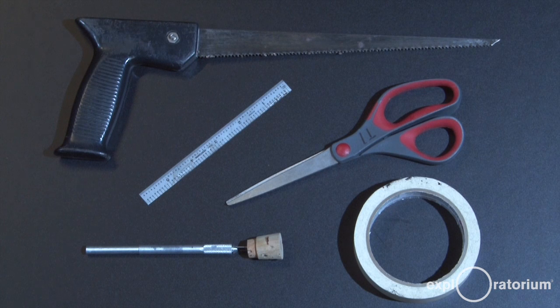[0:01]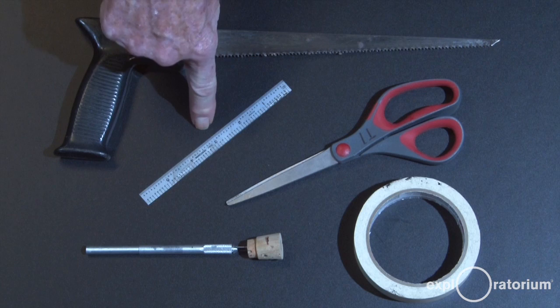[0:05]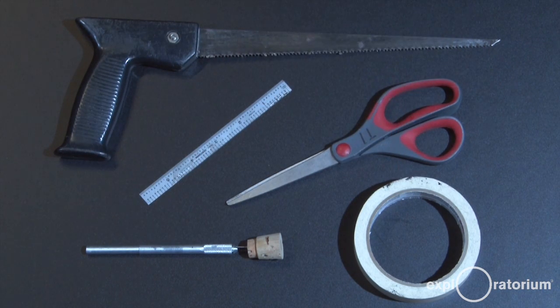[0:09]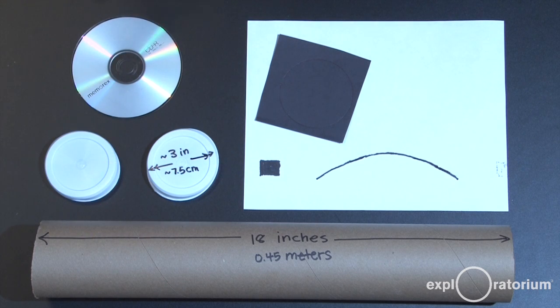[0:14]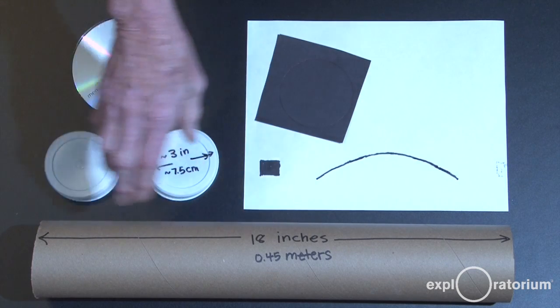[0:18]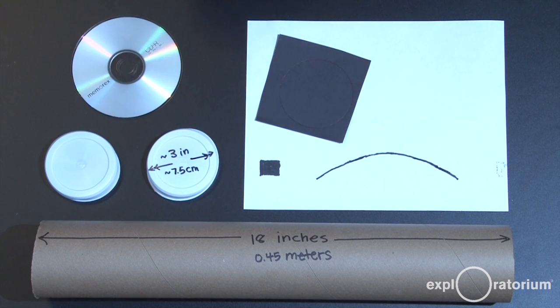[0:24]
The tools I used to build the spectrometer were a wood saw, a metal straight edge, a razor knife, a pair of scissors, and some tape. You'll need to get a poster tube. This is a 3-inch diameter poster tube. They come at about 3-foot lengths. You can cut them roughly in half. That'll give you a tube about 18 inches long or 0.45 meters long. You'll need the two end caps to shield out light from the tube.
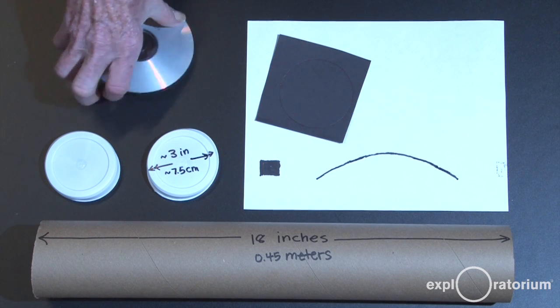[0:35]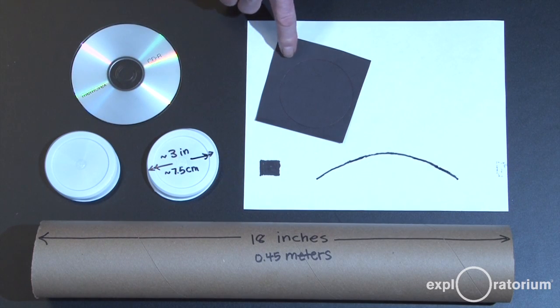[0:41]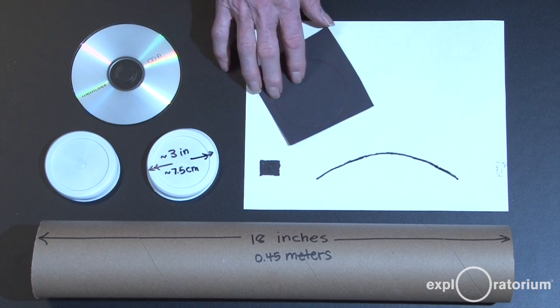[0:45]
You'll need a compact disc. The ones we found to work best are the recordable kind that are blank. Any CD will work, but these work the best. Sometimes they have a bluish coating on them. You want the ones that look silvery bright. You'll need a piece of construction paper, which we're going to cut our slit in, and you'll need our cutting guide, which will be available online.
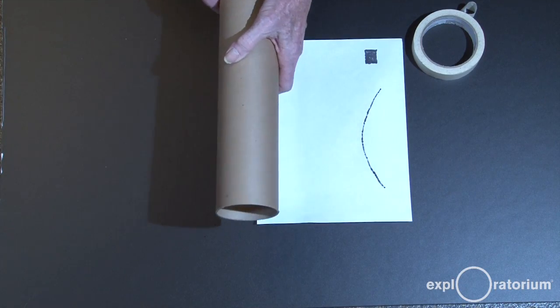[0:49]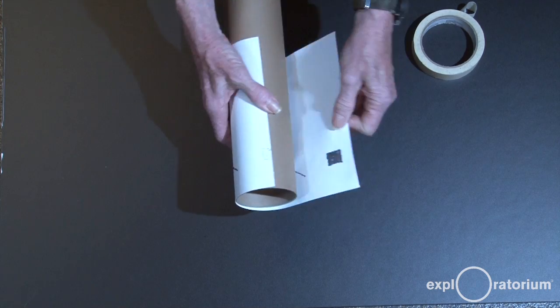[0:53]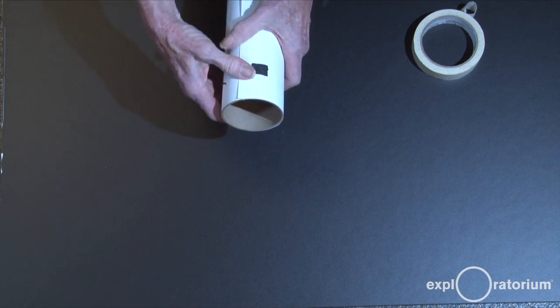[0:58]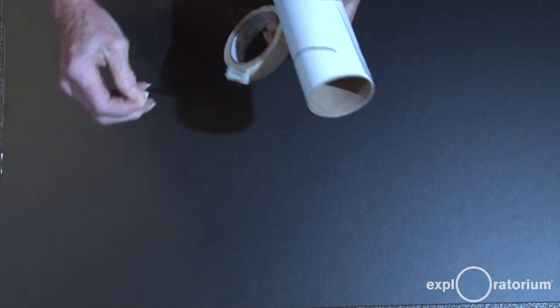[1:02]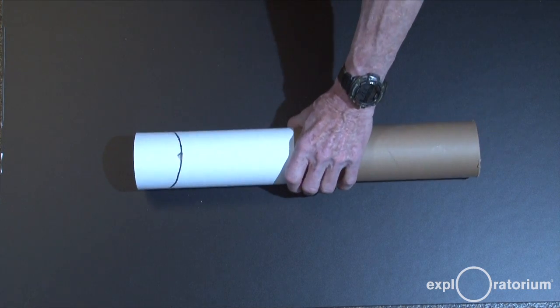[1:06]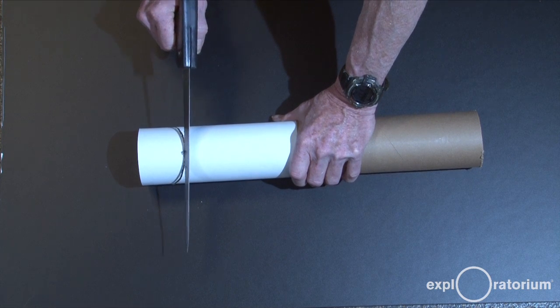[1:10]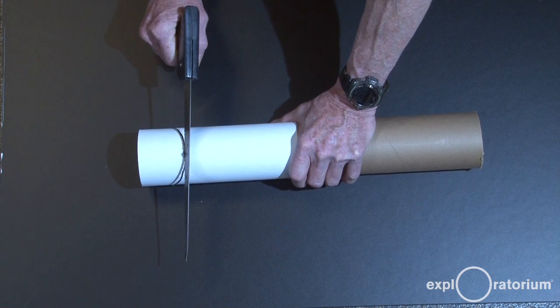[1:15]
To cut the slot for the compact disc, you'll take our cutting guide and wrap it around the end of the tube. Get it lined up with the end and straight. Then take a piece of tape and tape it down. To cut the slot, put it securely on a surface, bring in your saw, and cut slowly and carefully along the marked line. When you've cut all the way down, you're ready to insert the compact disc.
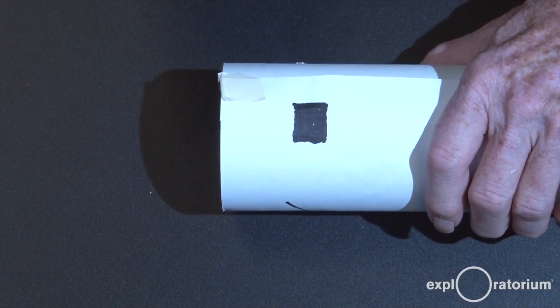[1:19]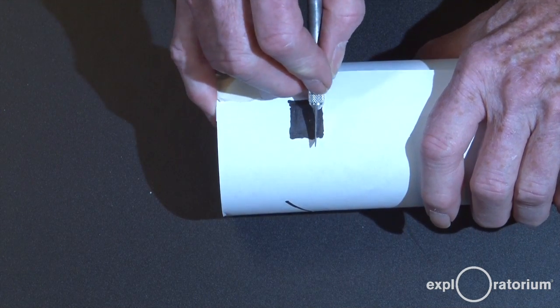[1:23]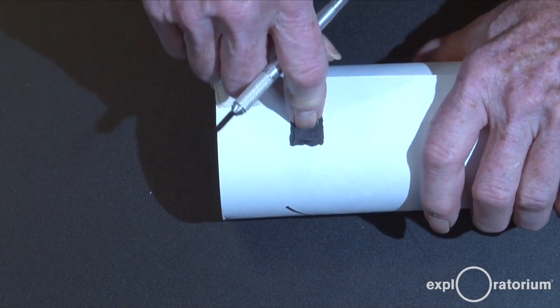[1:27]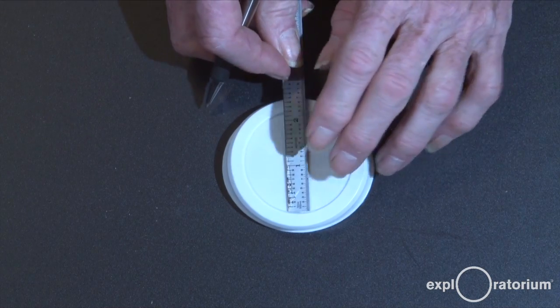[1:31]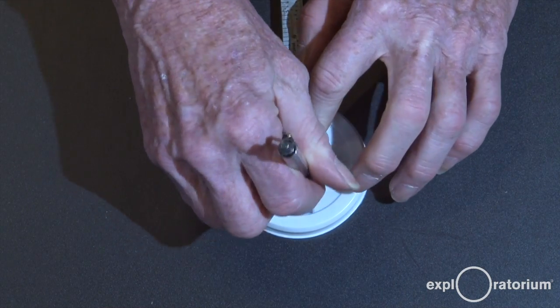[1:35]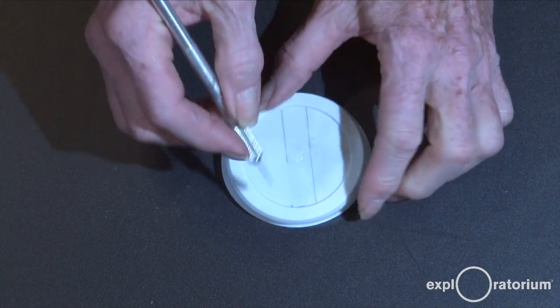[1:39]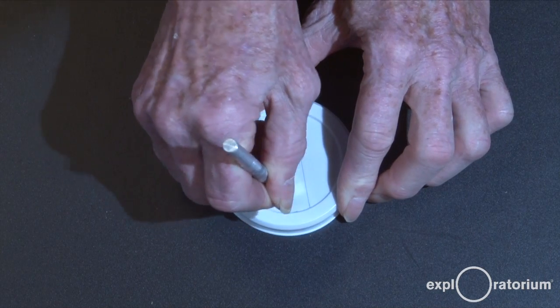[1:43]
To cut the eyepiece, you're going to use the razor knife, and you're going to cut all the way through that black square and then poke out the cardboard. To make the slit, the first thing we're going to do is cut a wider slot in the end cap. So I'm going to use my metal straight edge to mark two lines, and then I'm going to use my razor knife to actually cut out the slot.
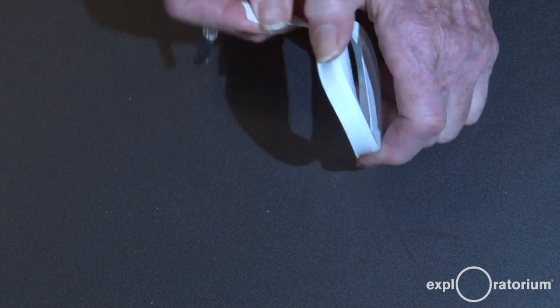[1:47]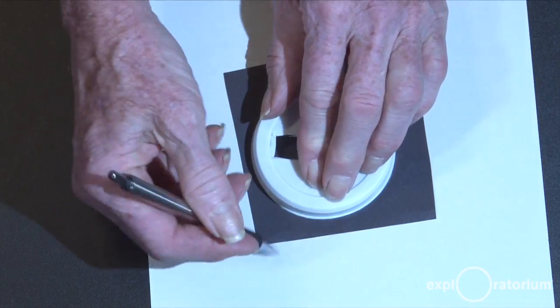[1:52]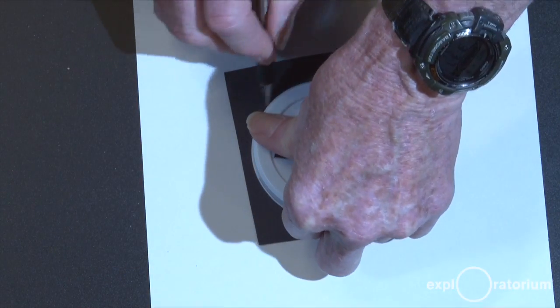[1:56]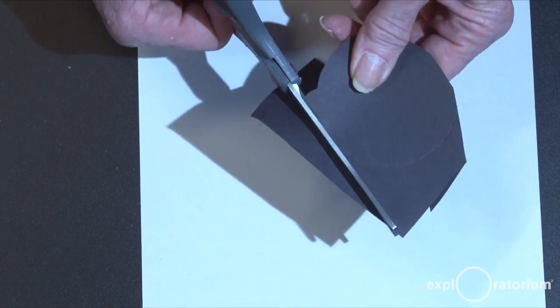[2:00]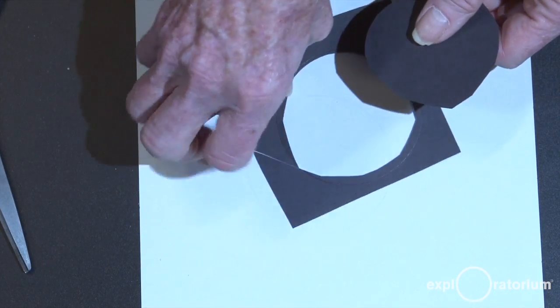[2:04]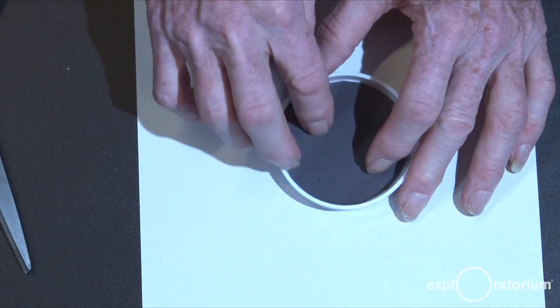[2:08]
Okay. The next thing is we're going to cut out a circular disc of black. First, I'll trace it with my pen. That gets me the outside outline. Then I'll use the scissors, but I'll cut inside that line a little bit. And now I have my disc of paper that will slide nicely inside my end cap.
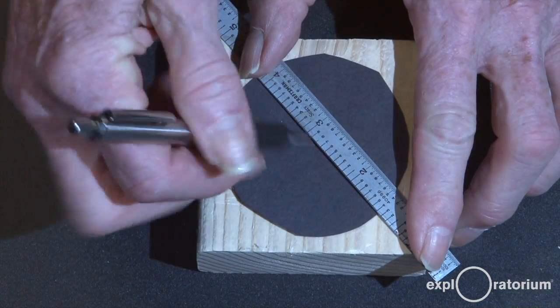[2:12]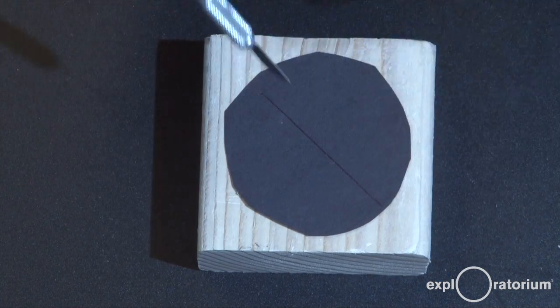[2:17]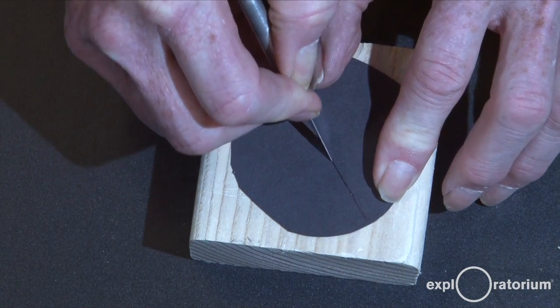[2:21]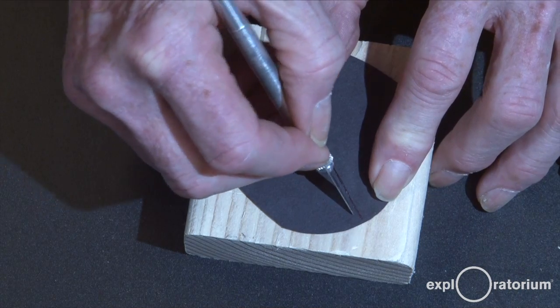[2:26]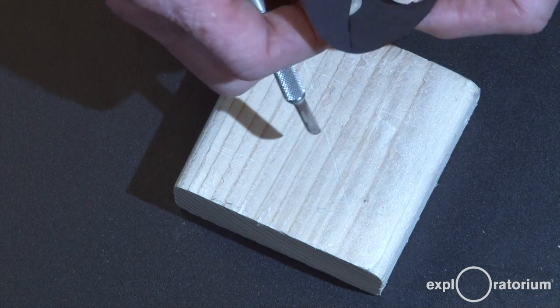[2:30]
So next, I'm going to make a line across a diameter of my black. There it is. And then I'm going to use my razor knife to cut a slit, nice straight slit down the middle, perhaps a millimeter wide. And there I have my nice slit.
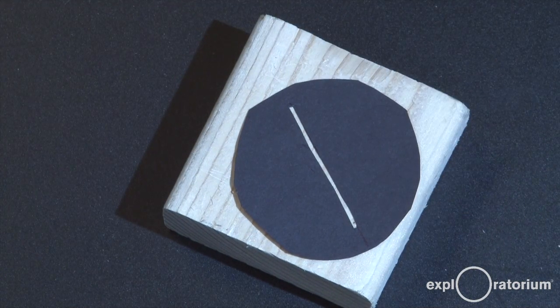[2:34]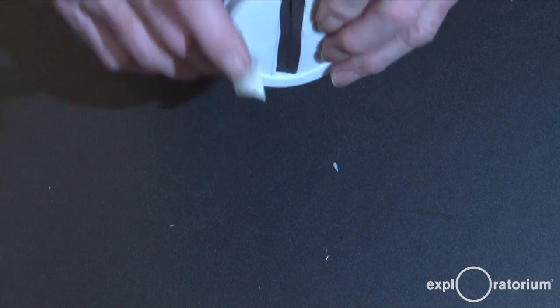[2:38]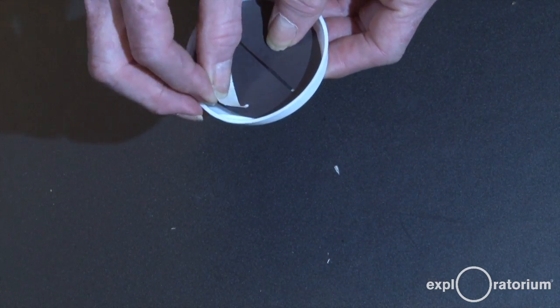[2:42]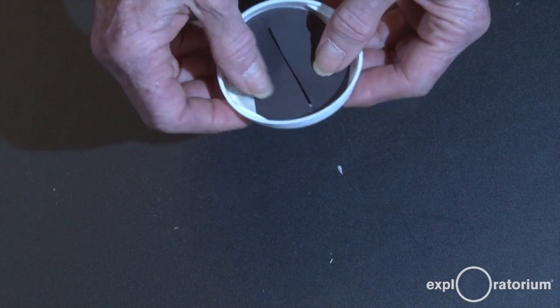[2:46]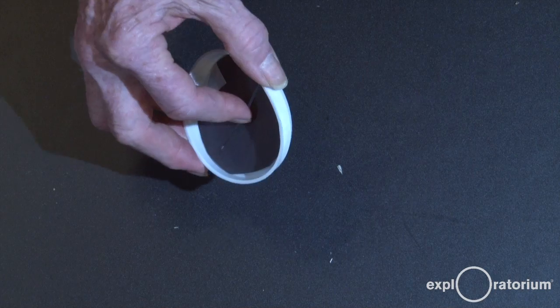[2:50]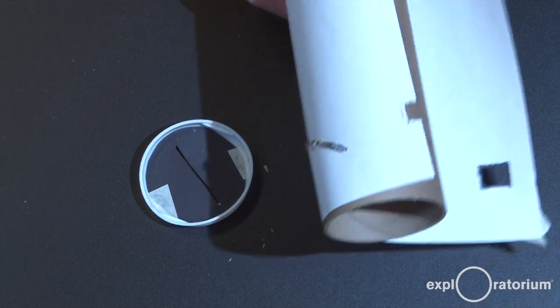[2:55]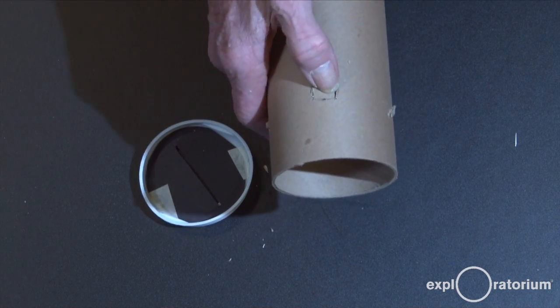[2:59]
So we'll take our piece of paper with a slit and we'll line it right up with the slot, so the middle of the slit's in the middle of the slot. I'll put a piece of tape off to the side to keep it from rotating, so now it will maintain its alignment. And then I will take it and put it into my tube. First, I'm going to take my cutting guide off. You'll see I've cut my slot for the compact disc. I'm going to punch out the eye hole.
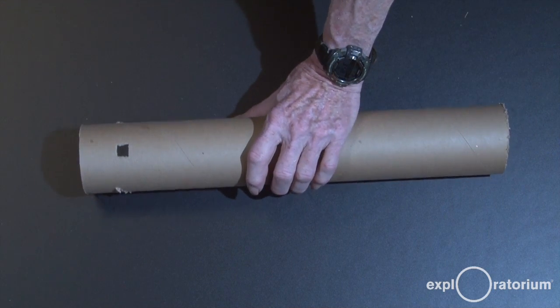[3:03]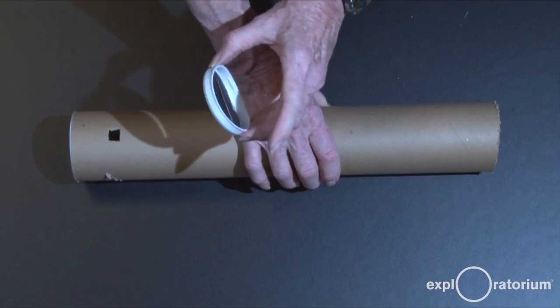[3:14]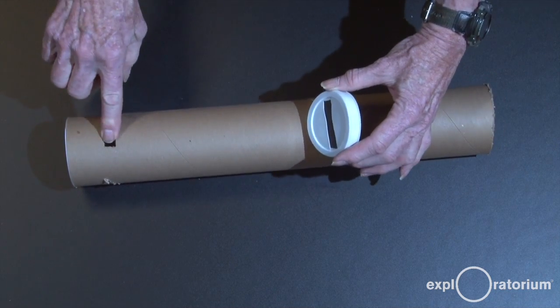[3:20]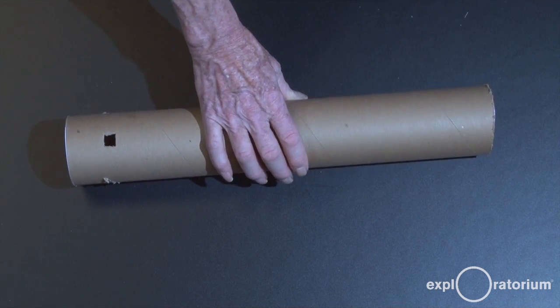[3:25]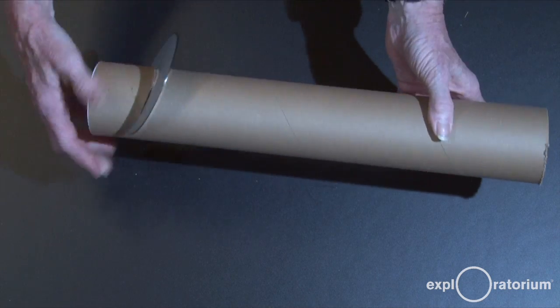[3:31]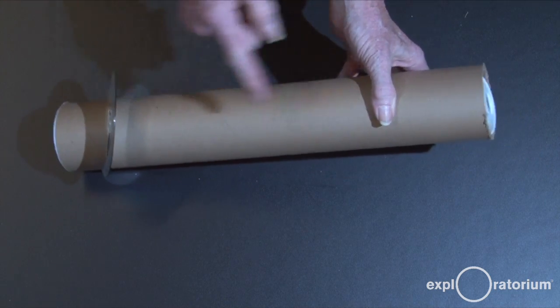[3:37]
And now to put the whole thing together, I'll take my tube and I'll take the end cap without the slit and put it over the end with the eye hole in it to block light. I'll take my other end cap with the slit and I'll arrange the slit so that it's horizontal like the horizon while this hole is straight up. And then I can slide it in and I'll get the orientation correct. Next step, I'll put the compact disc into its slot. You can see how that fits really nicely. And the mirror faces the slit. And here's my compact disc ready to go.